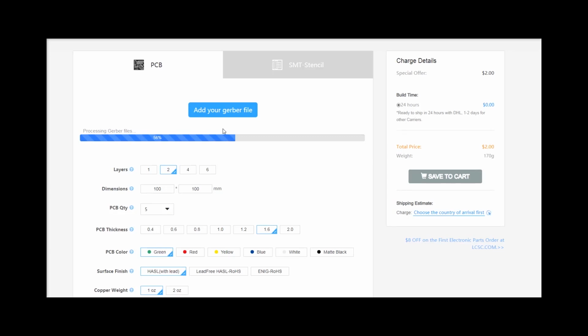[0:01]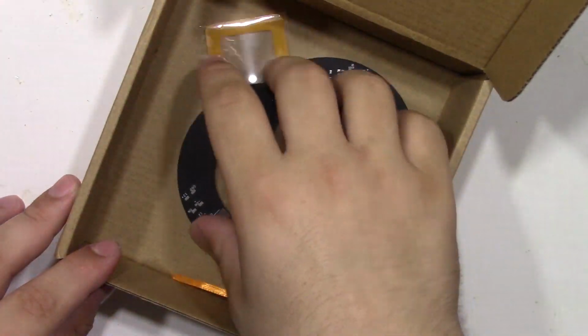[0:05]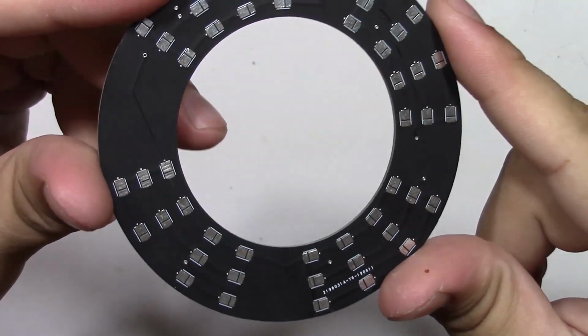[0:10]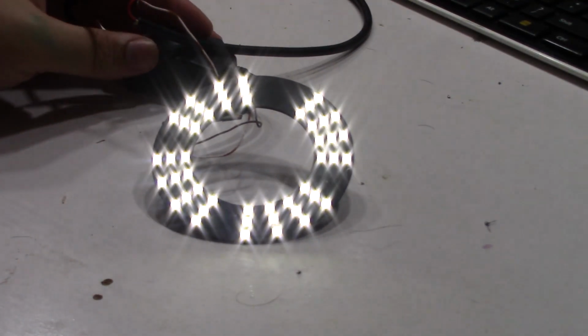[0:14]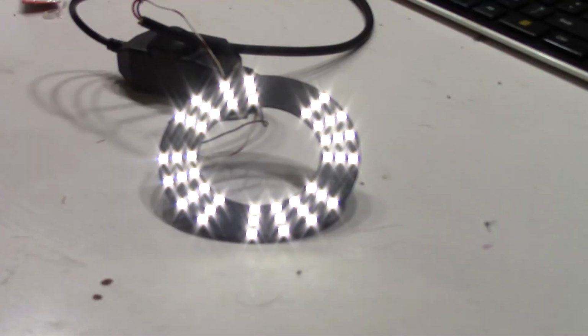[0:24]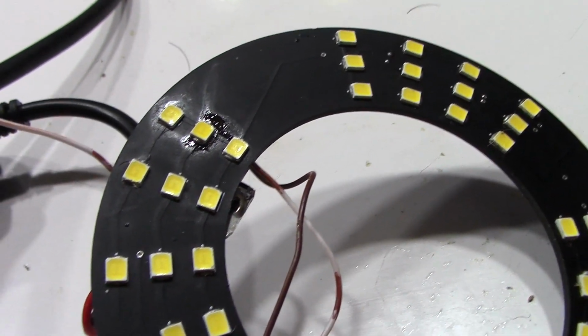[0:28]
I just bought a second microscope, and unlike my first one, it didn't come with the ring light. For some reason, good or even decent ring lights are pretty pricey. I paid $200 for the scope, and I will not pay $20 for a light, so let's see if I can design my own.
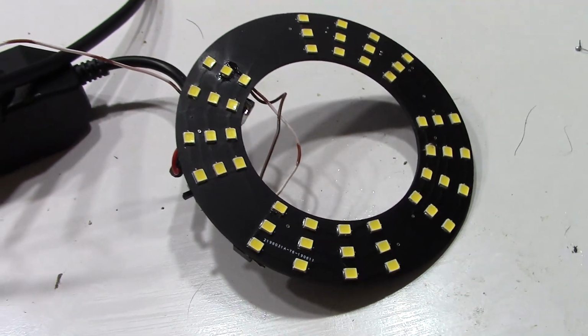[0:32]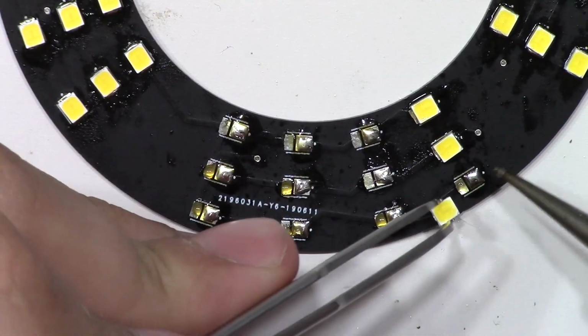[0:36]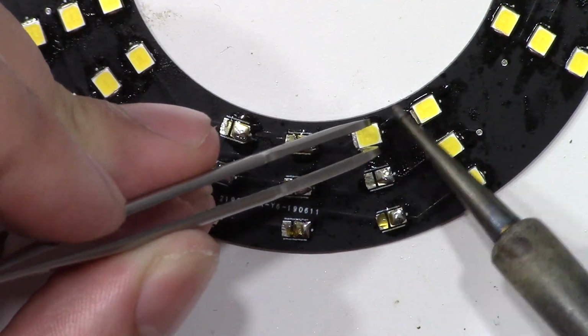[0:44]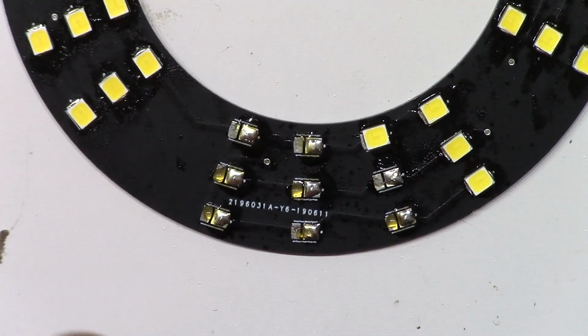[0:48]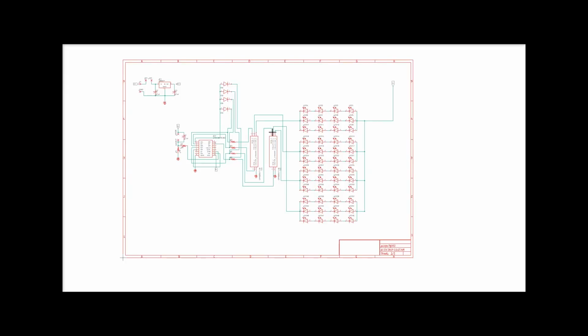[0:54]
So this is the schematic from my LED ring light from my microscope. It's pretty simple. A lot of it's unnecessary in a sense. It consists of 48 surface mount LEDs, which are in groups of 12. Right here we have them running in series, four in series in parallel with two more. So three sets of four in parallel ran in series, if that makes any sense. They're tied high to 12 volts. I should use a resistor in between the positive side of them, but I didn't because 12 volts. So we'll see what happens and go from there.
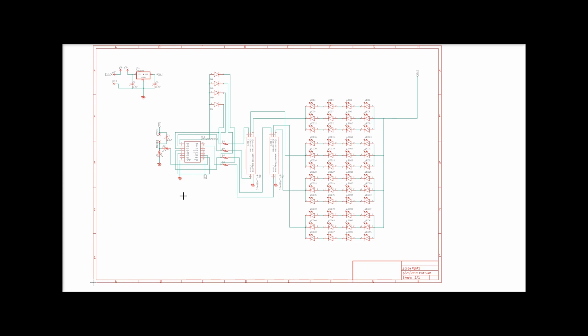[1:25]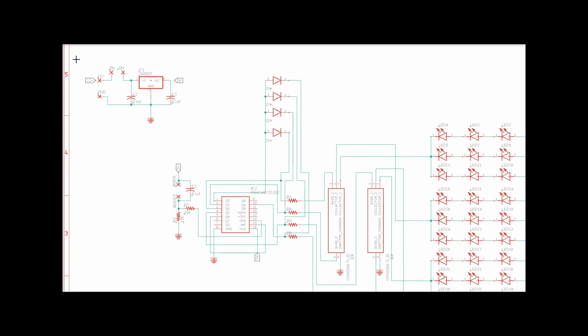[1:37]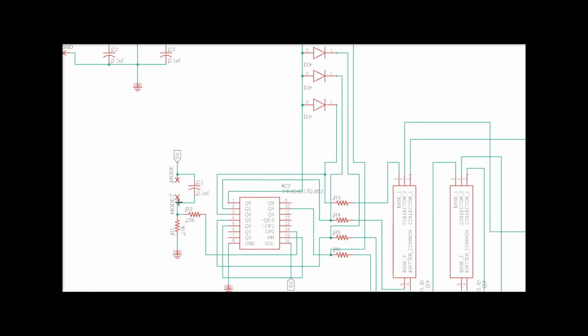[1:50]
Over here we have our control circuitry, which just consists of a 4017 decade counter, two dual packaged NPN transistors to control the groups of LEDs, four diodes up here, I'll explain those in a second, and our power supply for the 4017 decade counter. The LEDs take 12 volts, but the 4017 works at a lower voltage, so I just threw in a 7805 voltage regulator to give it a power supply. Right here we have our clock input, which we'll be using to shift the outputs of the 4017. We're just going to tie in a little tactile switch to this and push it manually. So I'll explain how it works real quick.
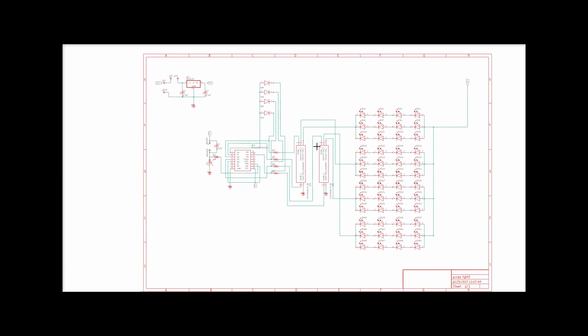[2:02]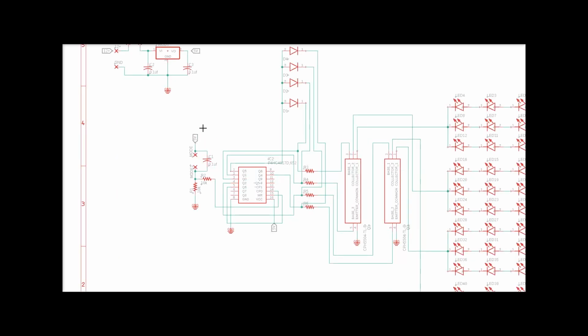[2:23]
I kind of want to go after the same method or functionality that I used for my relay workbench light that I made a while back, in the sense that I want one group of LEDs to be active at one time, or all of them at one time. This is a very specific need. I'm just trying to see if I can throw light in a certain way. And if it doesn't work, I'll just have them active at all times and just dim it from there or something like that.
How it works is quite simple. The 4017 decade counter shifts its output high in a sequential order based on a clock input. In this case, I'm using it manually. So we have these four resistors right here. They are tied to the base of these two transistor packages, which is just four transistors, and these four diodes up here. You push the button and it'll shift one output high, push it again and it'll shift the next output high, turn that one off, and so on.
When you get to the last output, which is output 5, it'll send a small bit of current to these diodes up here. They're all tied in parallel on this side. And on the cathode side of the diodes, they are tied to resistors over here, just in parallel with the resistors. The idea behind this is to have these diodes activate all of the bases of these transistors at once without having any current seek into the path of the other outputs, and activating the transistors by themselves in a different output mode. So this allows me to turn on all outputs at once without interfering with the other outputs, if that makes any sense. Hopefully I explained that well enough.
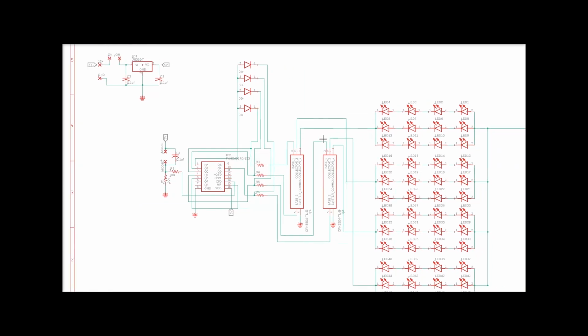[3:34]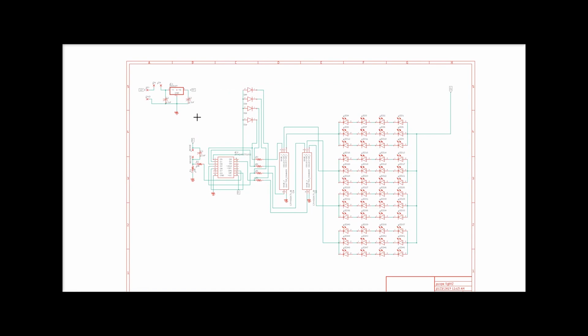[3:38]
Pretty straightforward circuit. If you didn't want this control circuitry over here, all you have to do is just route it with the LEDs and you should be good. I just wanted to see if I can make it a little bit more interesting and see if I can throw the light in a fun way.
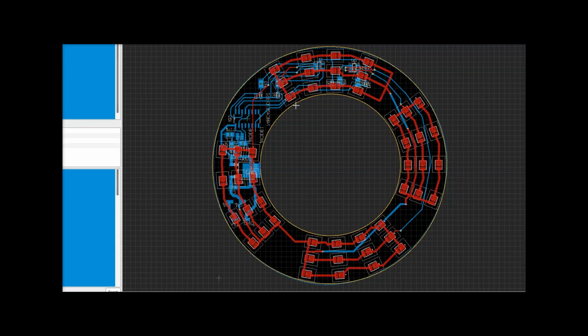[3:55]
So we'll take a peek at the board file that I came up with. Just switch over here. And you can see that it's a bit weird. I've never routed edges on a round board before, so it was a bit of a challenge. I think it was kind of fun. It turned out okay. Some of the edges make me cringe a little bit, but overall it should work. They are thick enough to handle the current and all that jazz.
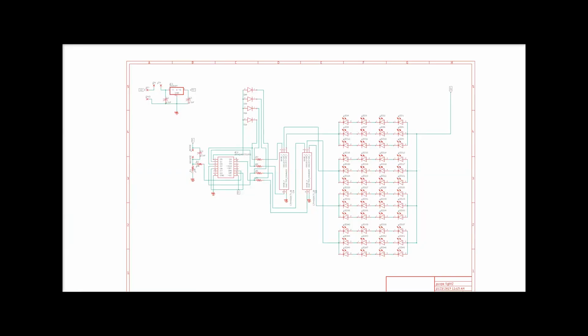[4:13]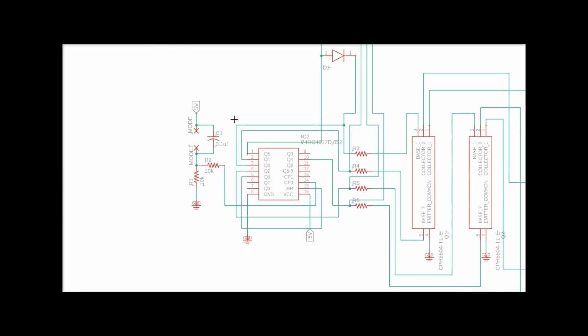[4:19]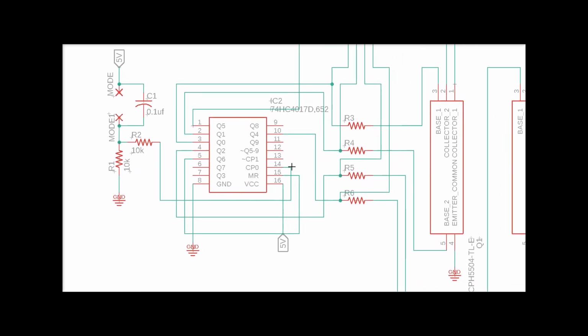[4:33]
But before we go ahead and solder this thing, I want to point out a couple things that I noticed after I sent the board off to JLC PCB, of course. If we take a peek right here, we will notice that I want to say the clock enable pin isn't grounded. I'm pretty sure it's not grounded. Let's go ahead and take a look here.
I think 13 is the clock enable. It's not grounded. That pin has to be grounded in order to enable clock input, of course. And I also messed up the sequential order of the transistors right here. As you can see, Q3, which is pin 7, is not being used, and it should be. Instead, I accidentally went and skipped it, and I'll have to address that as well.
So in the following assembly videos, I'll just add these two mods in, and hopefully that's the only mods that are needed. I'll just ground this pin right here, which is pin 13. I'm pretty sure it's clock enable. I'm not too sure what CP1 means on this, but it is clock enable, and I'll be sure to adjust these as needed. Q3 should be used, but instead I went Q0, Q1, Q2, skipped Q3, Q4, and Q5, so I'll have to address that.
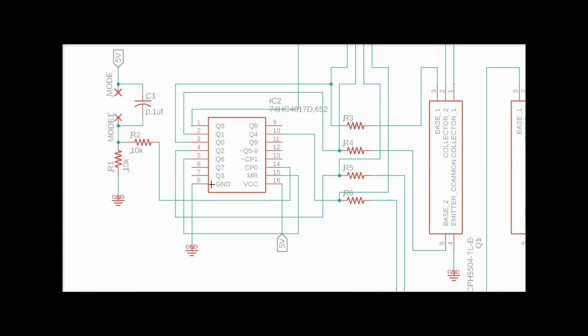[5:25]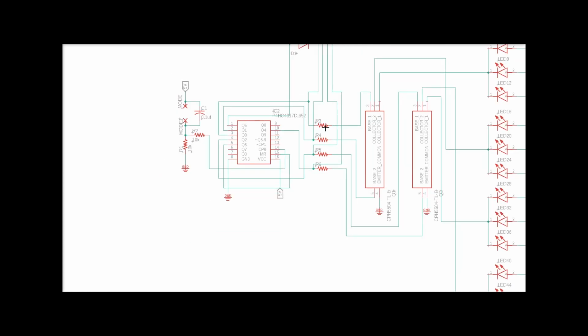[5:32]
This really isn't a big deal, but you'll notice a small delay when you're shifting the outputs, and I don't want that. I want it to kind of work smoothly. So let's go ahead and assemble this thing.
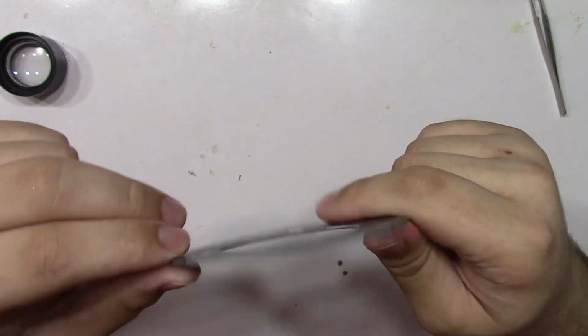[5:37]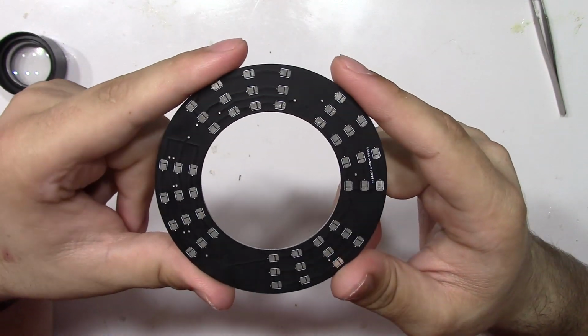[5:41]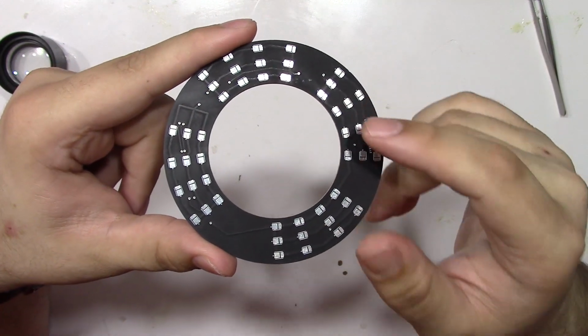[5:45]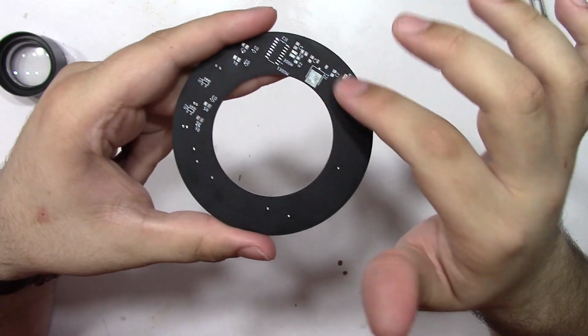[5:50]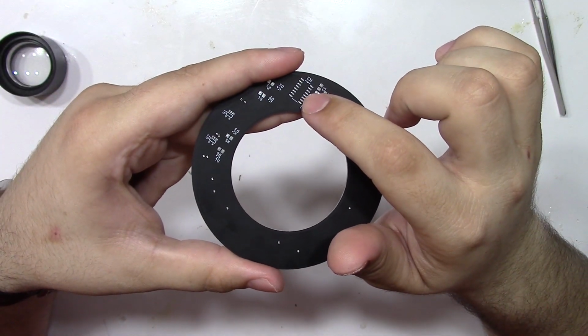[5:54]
But before I solder components up to it, I want to get a closer look at it and show you guys everything. This is a really good quality board from JLC PCB. As you can see, we have the surface mount LEDs on this side, which is the bottom, which it'll point down like this. On this side, we have all the components that control the LEDs, as well as the power supply for the decade counter right here and all the other fun stuff.
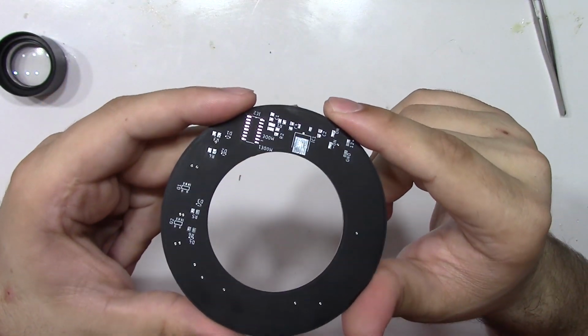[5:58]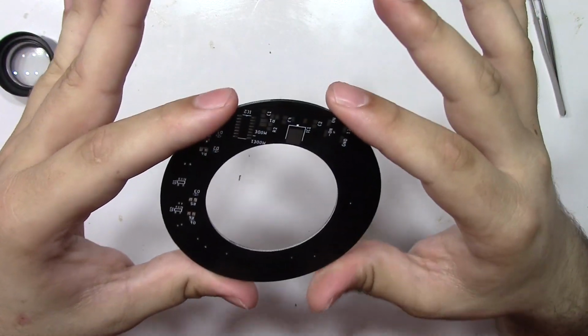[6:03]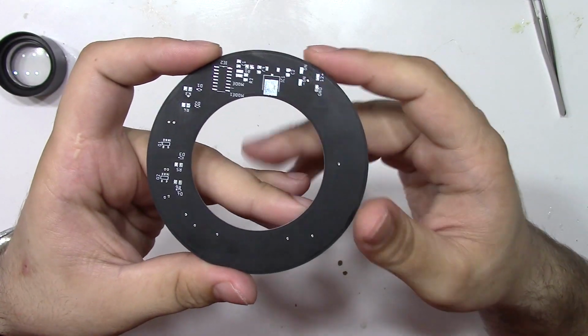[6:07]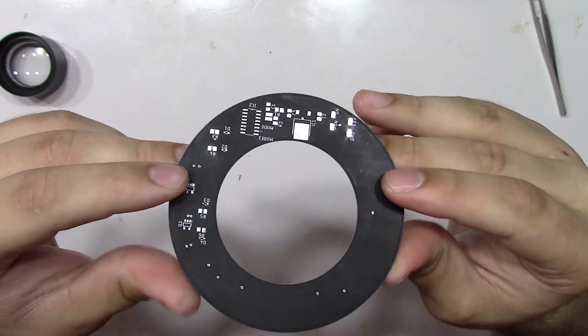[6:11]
When I originally designed this, I expected to use it in a more modular sense, but now that I got it, I kind of realized that I don't need to. What I mean by that is when I designed it, I thought I'd be using a case to house everything in, but it's so small and compact, I actually don't need a case.
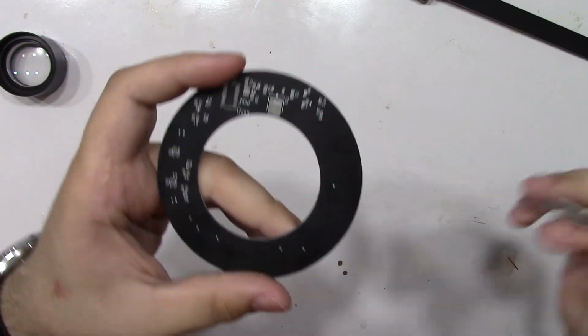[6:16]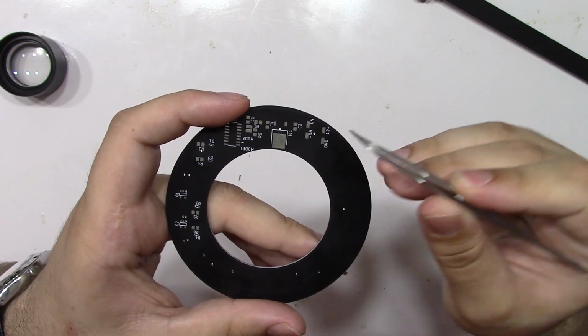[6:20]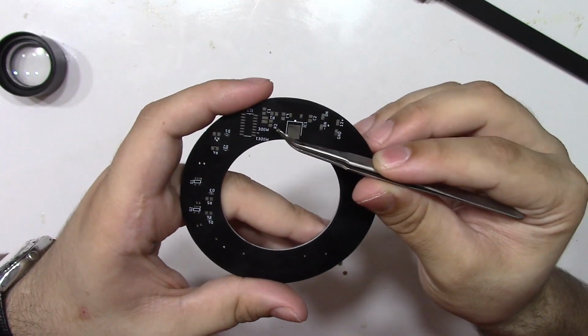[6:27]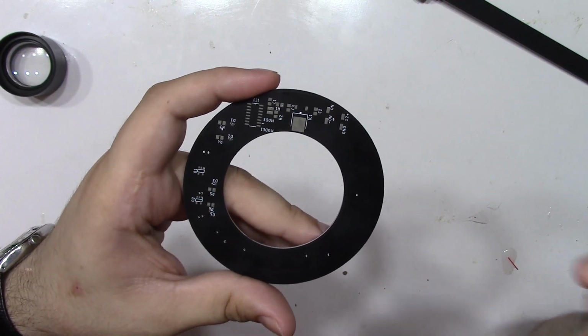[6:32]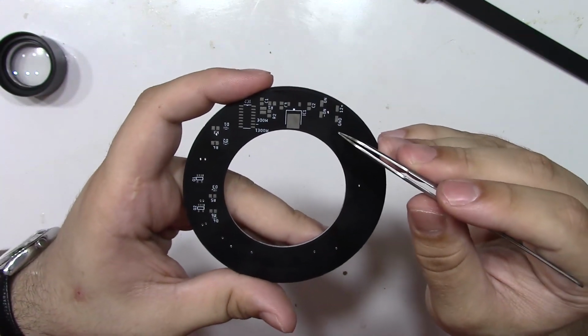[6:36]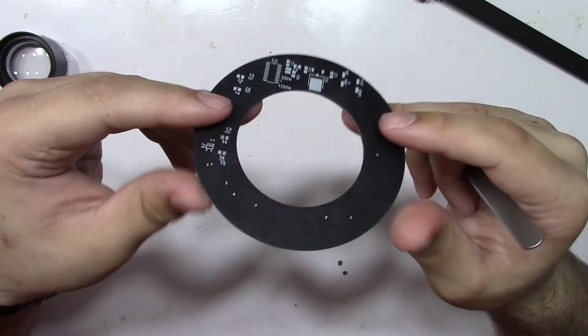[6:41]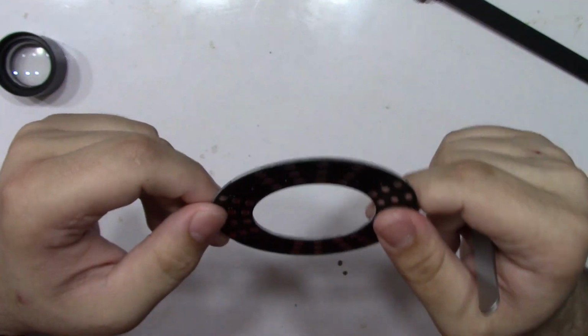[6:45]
So when I put all of this stuff into Eagle, my idea was to use wire pads to wire up the switches and everything and the power supply. So right here is the 12 volts in, the ground for the 12 volts. Little on-off pads that turn the whole thing on and off, and over here we have what's called mode, which helps select what group of LEDs, if not all of them, you want turned on. And looking at it now, I probably should have just included pads for buttons and switches on this, because it's pretty small and it's really compact, so I don't think I need to put a case on it, and I don't want to put a case on it now that I see it.
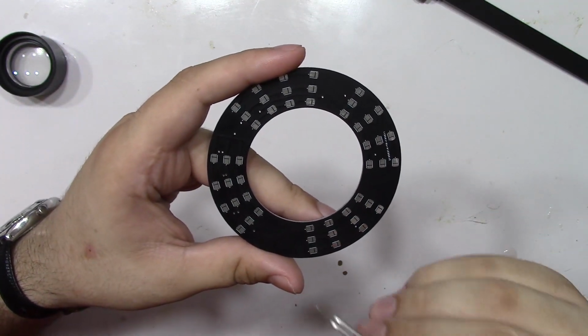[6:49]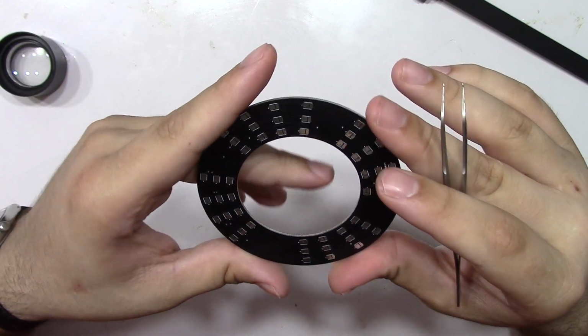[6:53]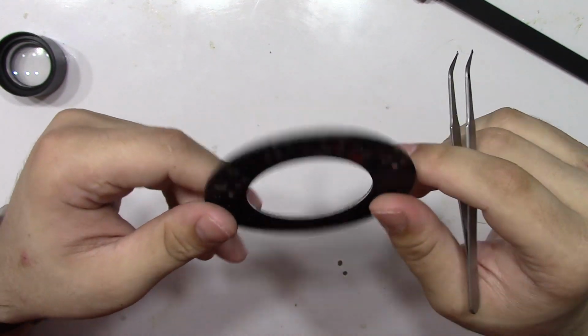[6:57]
And to explain the black solder mask, my idea is that the black will help the light bounce off of it and reflect more in the direction of what you want. So let's go ahead and solder up some components on this thing and see if it works.
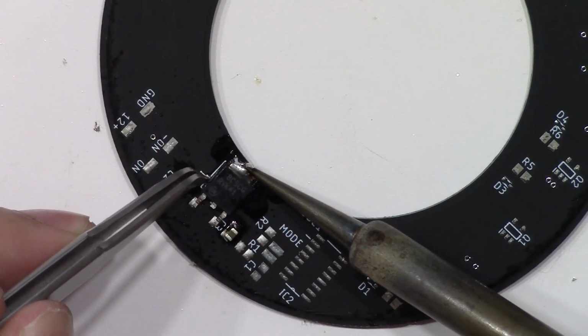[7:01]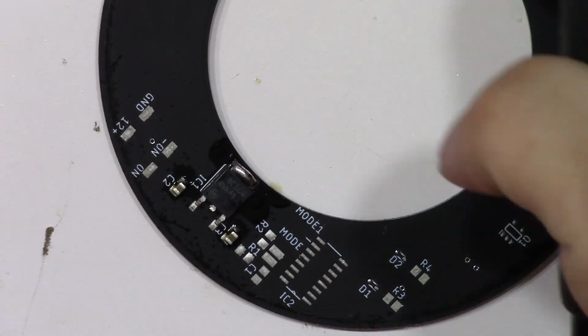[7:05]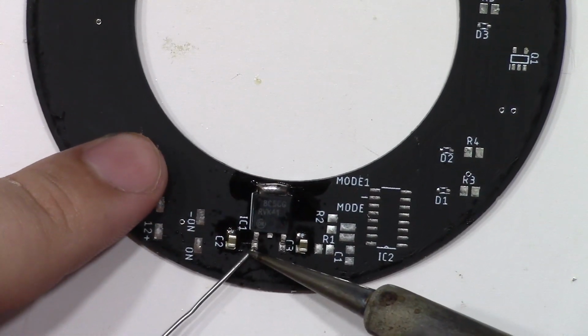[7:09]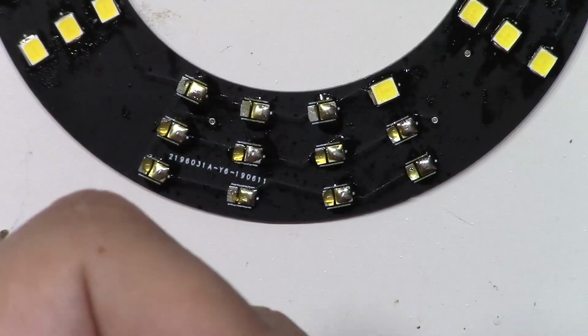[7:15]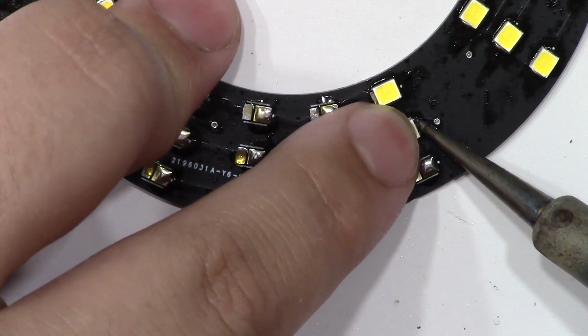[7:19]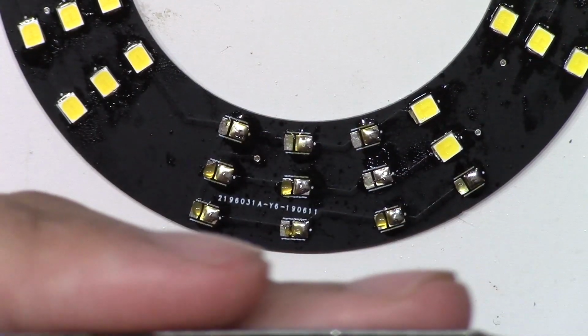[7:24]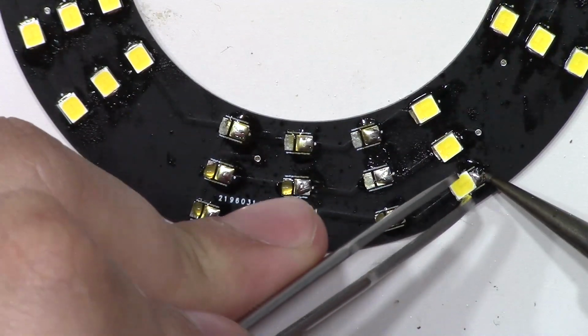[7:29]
The most time-consuming part of this project was soldering all the LEDs. You have to be really careful when soldering them. If you leave your iron on too long, you risk damaging the LED. Solder them from the sides and do so quickly.
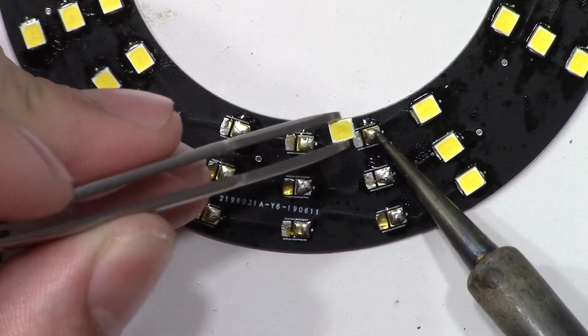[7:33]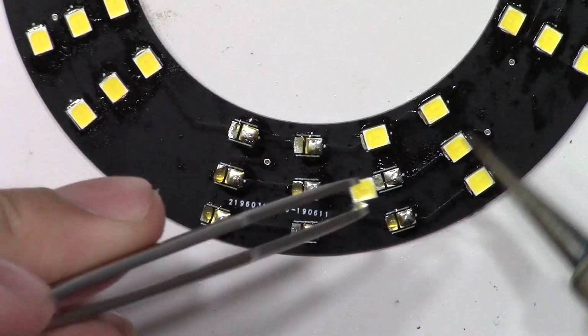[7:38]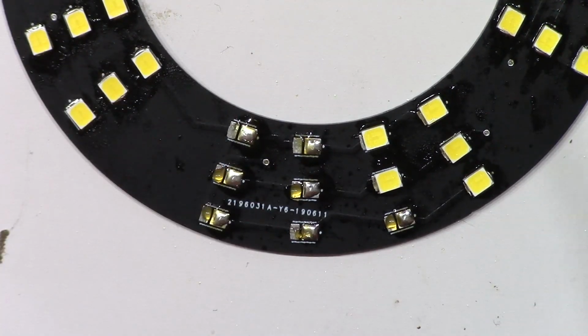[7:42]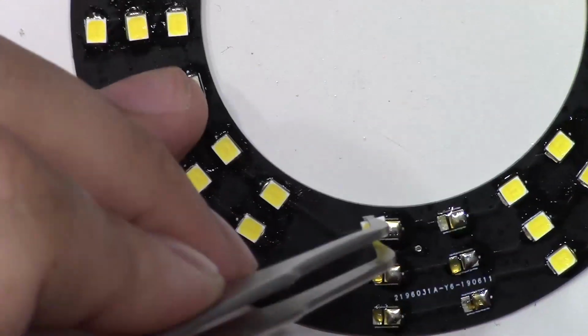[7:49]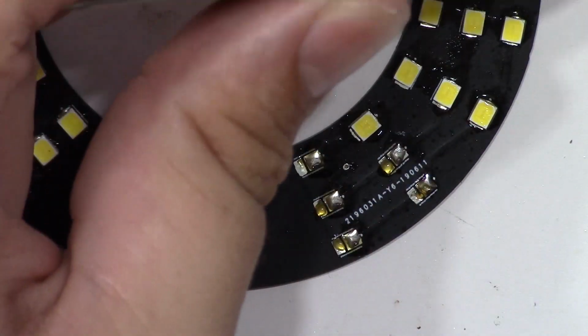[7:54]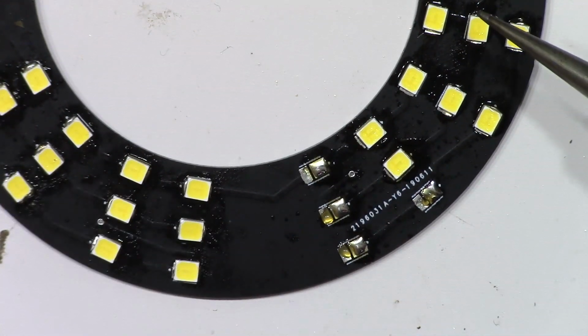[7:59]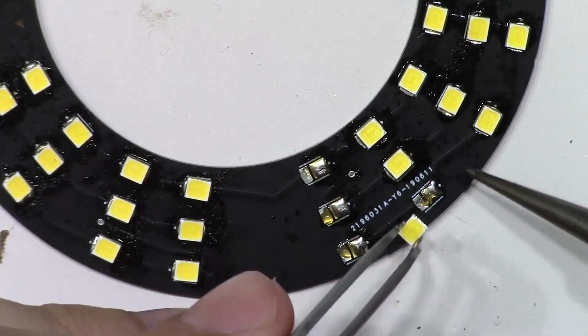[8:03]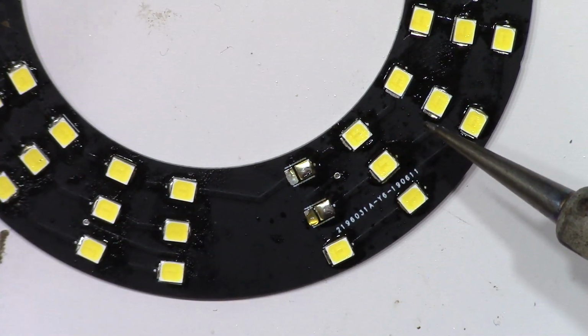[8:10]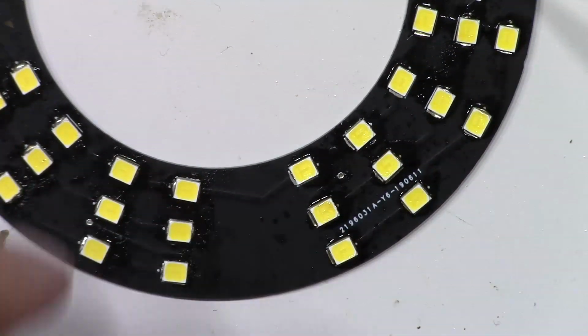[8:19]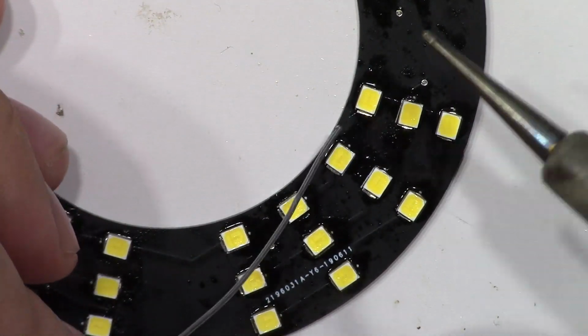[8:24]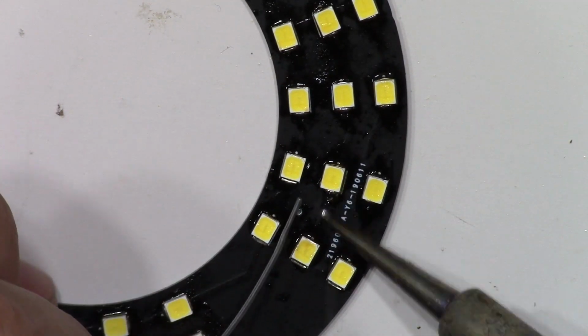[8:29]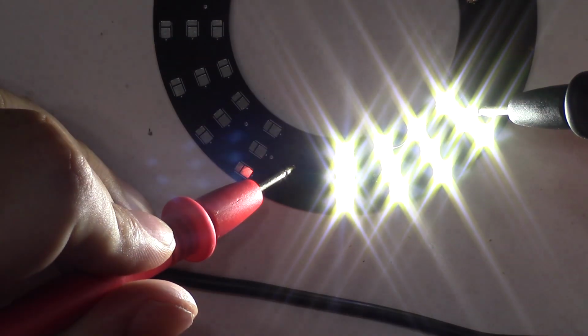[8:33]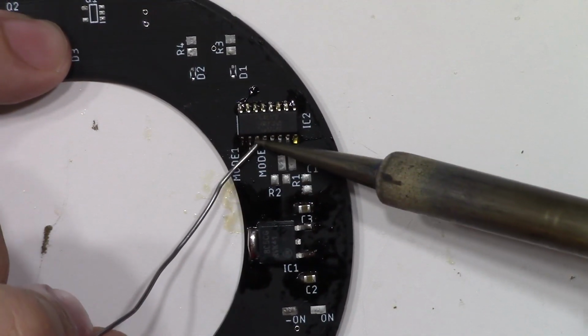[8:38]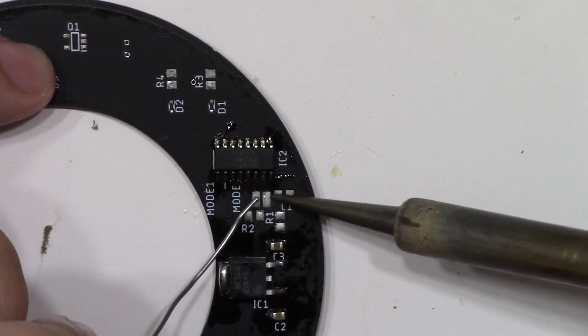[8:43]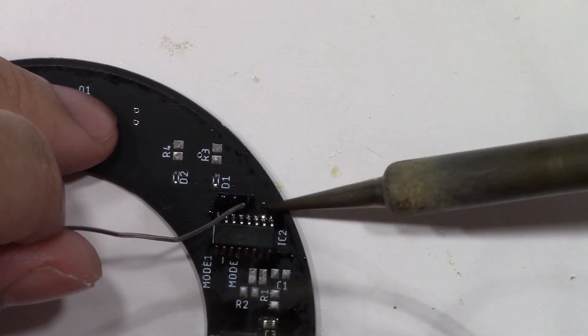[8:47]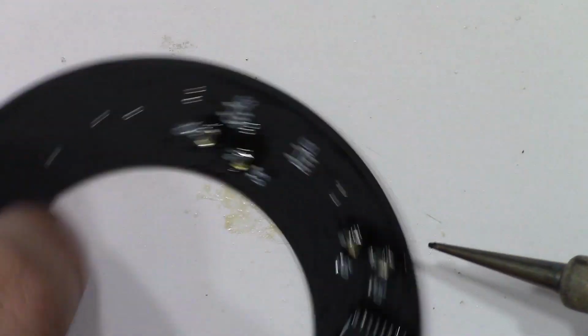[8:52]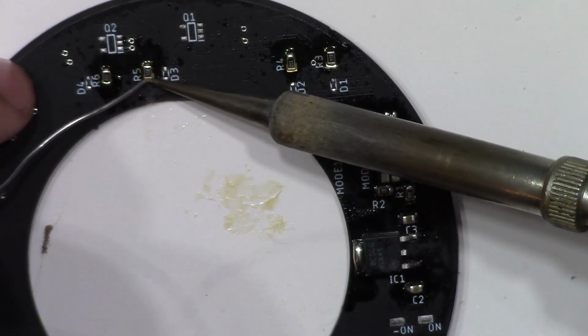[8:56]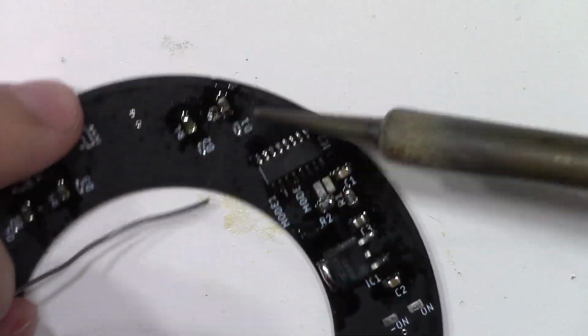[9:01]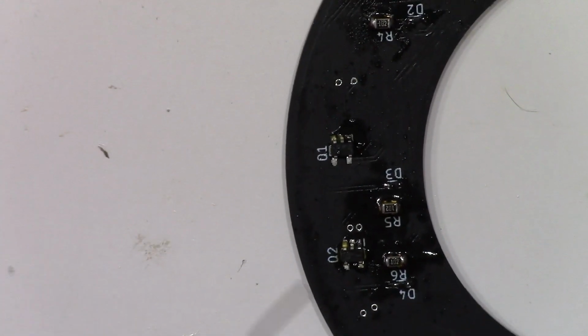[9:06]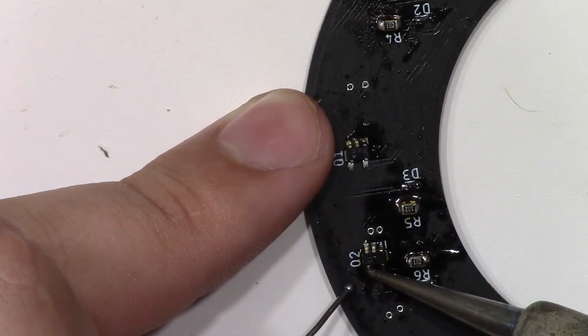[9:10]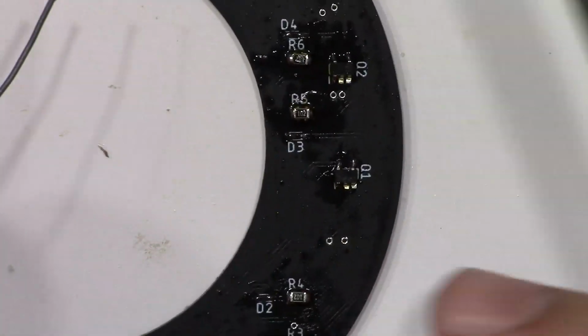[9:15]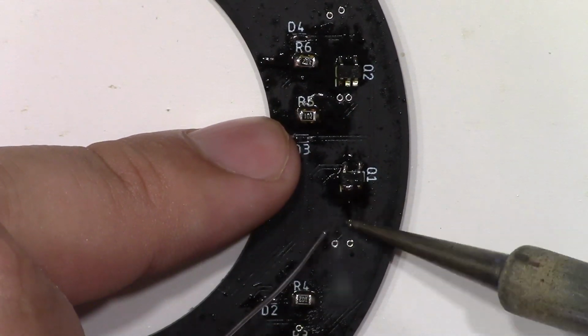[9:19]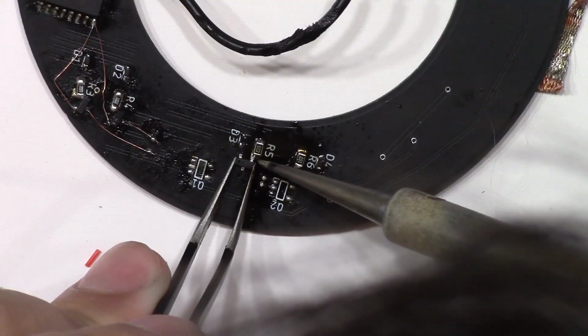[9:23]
After everything was soldered, I gave it a quick test to find out that it didn't work. For some reason, the dual package transistors don't like to play well with each other. I'll explain more later, but for now, let's just go ahead and mod the board to make it work, and we'll address everything else in another schematic.
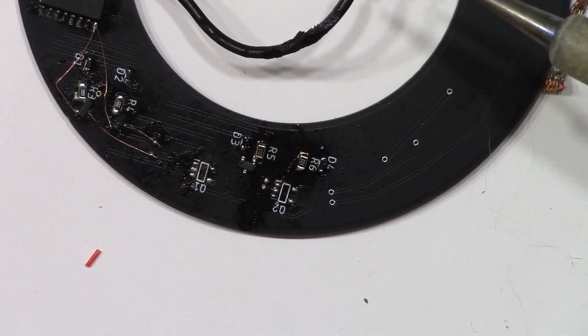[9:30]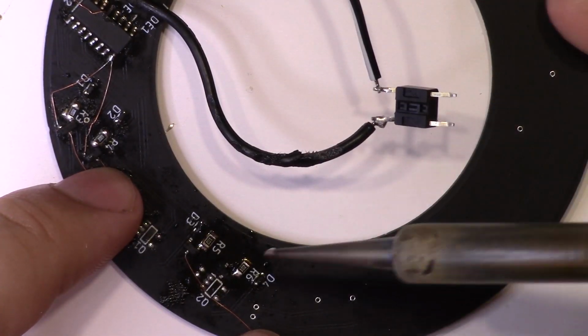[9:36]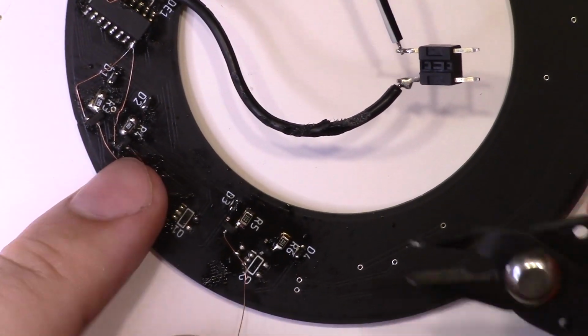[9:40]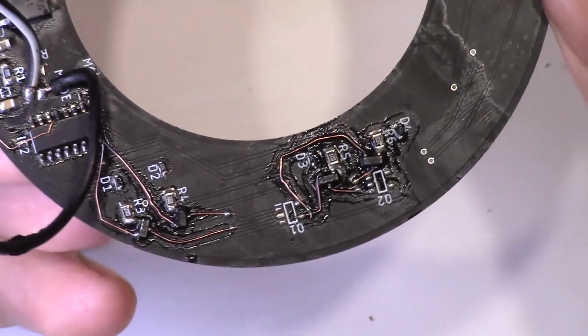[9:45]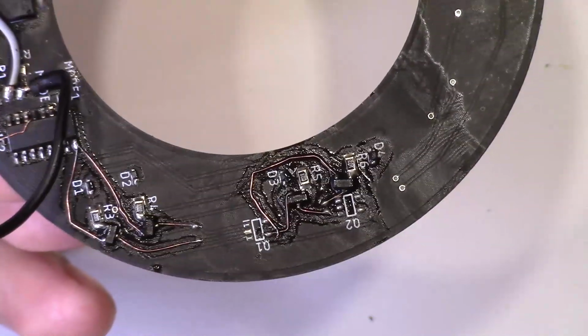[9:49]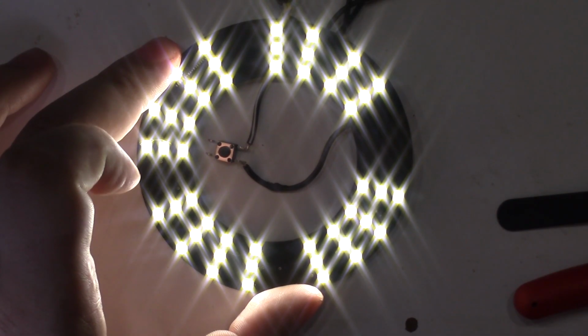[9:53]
This board required a lot of modifications to make it work. As you can see, I swapped out the dual package transistors with little single package ones that I had on hand, and I had to route a lot of my own etches using thin copper wire. After all the modifications were complete, the board worked just fine, so now it's time to go ahead and incorporate all these changes into a new design.
So after getting an idea of what needed to be done for the previous board to work, I went ahead and incorporated all the mods to a new schematic file, and it's shown right here. As you can see, I went ahead and got rid of the dual package transistors. For some reason, they didn't like to play nice with each other. If one base was activated on one, another one would be slightly activated, and you can see one group of LEDs turned on at full brightness, the other one's just kind of dimmed. I didn't like that, and for some reason when I switched out the dual packages for individual ones, it worked just fine.
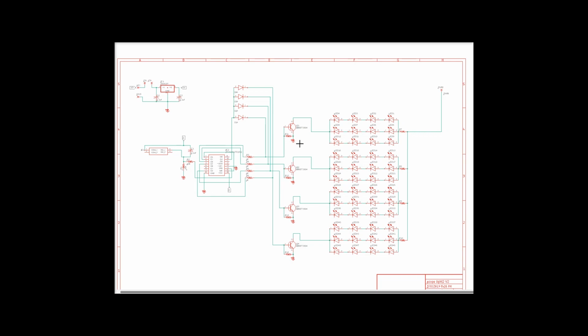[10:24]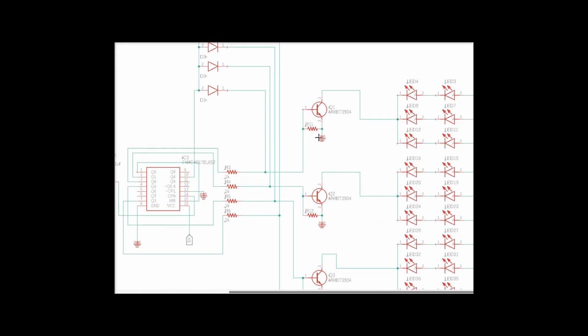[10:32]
So I incorporated that into the schematic, and I'm using 3904, which is just 2N3904 equivalent transistors, and they work just fine. I went ahead and added pull-down resistors to the bases. It's a value that has yet to be determined. Might not even be necessary if all works well, but I figured it might as well, you know, prove safe just to throw that in there if I need it.
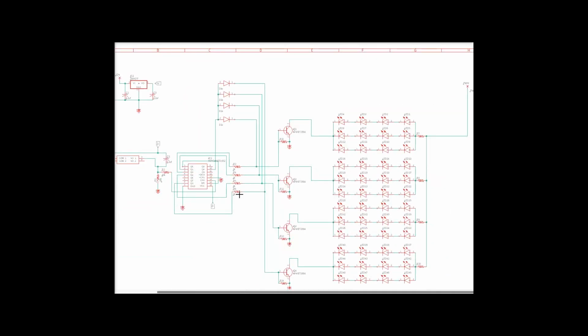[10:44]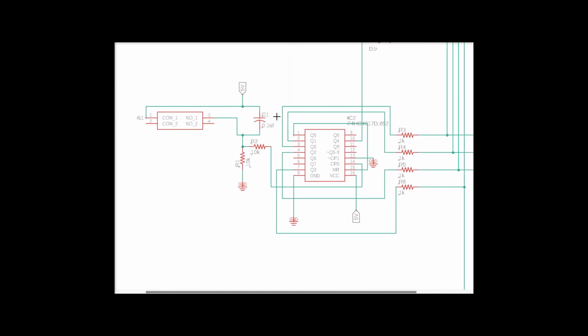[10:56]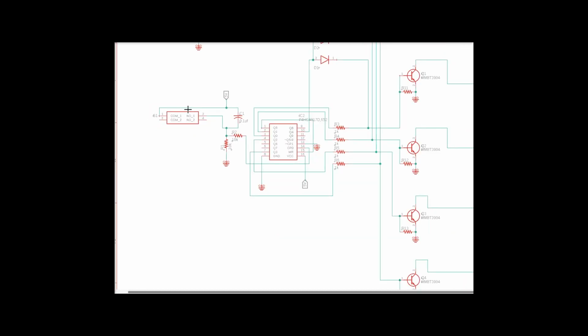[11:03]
I also went ahead and fixed the issues with the 4017 decade counter circuit. I used Q3 instead of skipping over it, and I grounded the clock enable, which means this will work just fine. In addition to that, I added a tactile switch to it, so I didn't have to mount a tactile switch externally, which after seeing it on the first board looked kind of stupid, so I just went ahead and threw that in.
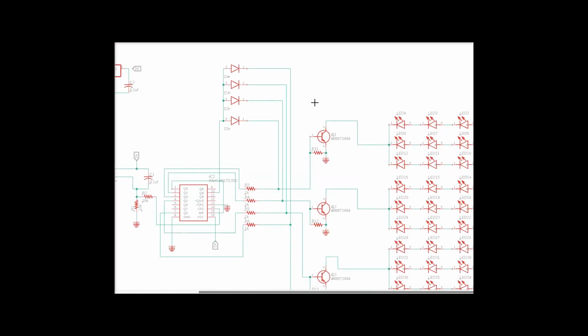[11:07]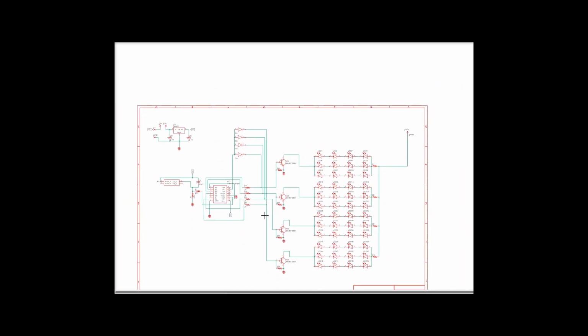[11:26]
I also moved the cathode position of the diodes. So when all these diodes turn on, it would go to this side of the resistor. For some reason, that proved to be too much resistance for it to turn on the bases of the transistors. So moving the cathode position to after the resistor proved to work just fine, and all that is good.
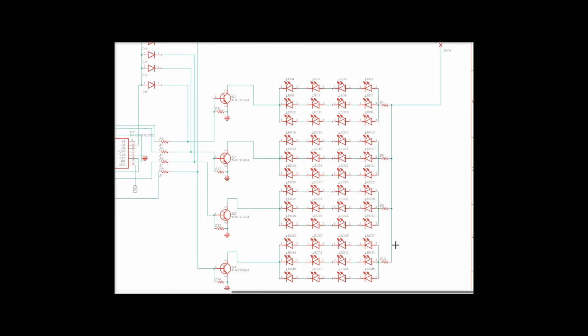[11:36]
And over here, you can see I added resistors to the grouping of the LEDs. Better safe than sorry. It might not even need them, but I just figured I'd throw them in there. Sure, I'll get some hate for not using resistors individually with the LEDs, but I'm pretty sure this is just fine. I've used one resistor for a grouping of LEDs in the past, and it worked just fine, so no big deal there.
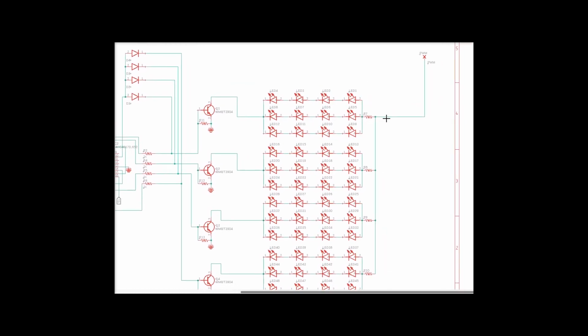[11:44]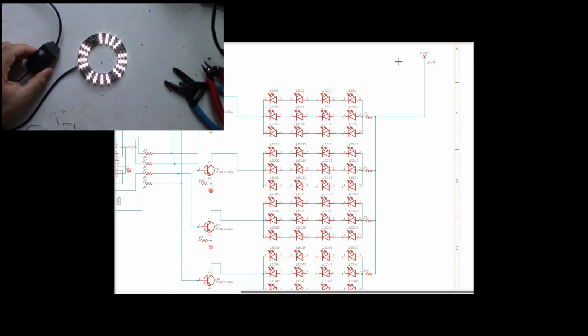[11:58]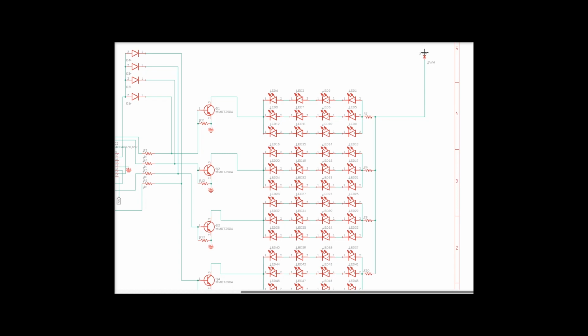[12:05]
In addition to all this stuff, I went ahead and tied the high LED, which used to be 12 volts, to a pad called PWM. I picked up an external LED dimmer thing that I found on Amazon, which is right here. And for some reason, it worked awesomely, so I just went ahead and tied all the anodes of those LEDs to this PWM, that way I can dim it externally without having to add my own dimming circuit to an already crowded board, which is pretty cool. If you don't want this, you don't have to include it, but I figured it works really awesome for me. And that should be all the changes to the schematic.
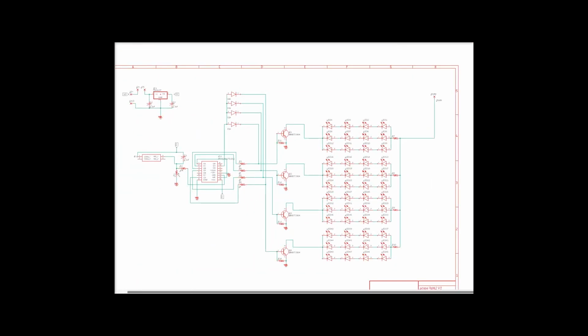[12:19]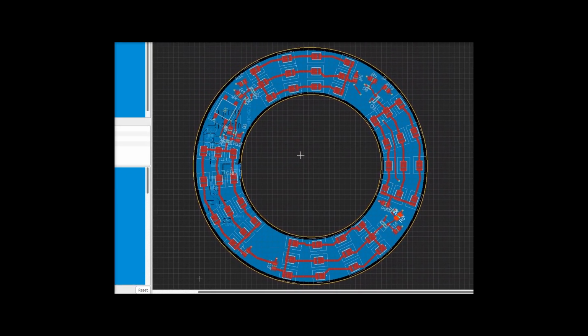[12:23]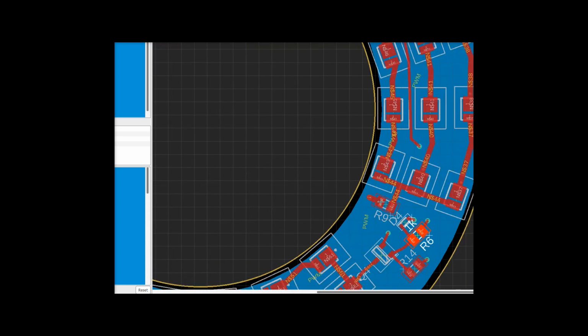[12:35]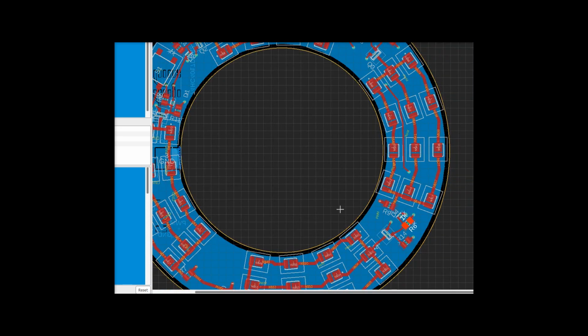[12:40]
Let's go ahead and take a peek at the board file. So the board got some stuff done to it. I had to accommodate for all the added components. As you can see, after the LEDs, we have the transistor, its resistors, the diode, and all that stuff, and then we have the resistors going into the LEDs right here. So I had to make room for a fair amount of parts.
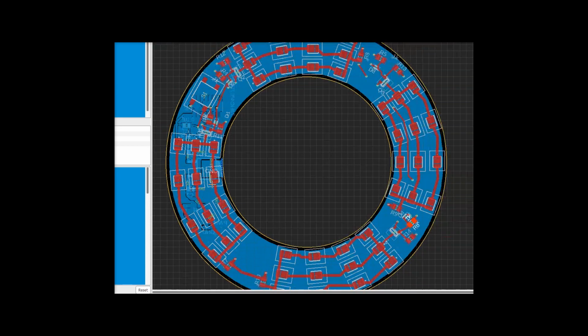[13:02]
For some reason, with Eagle, whenever I add a polygon and call it ground or just fill it ground, it likes to hide all the etches on the bottom side of the board. So if anyone has a remedy for that which doesn't include ripping up that etch, let me know. That'd be really cool. I know in previous versions of Eagle it worked just fine, but for some reason with this one it doesn't like to do it. I have no idea why.
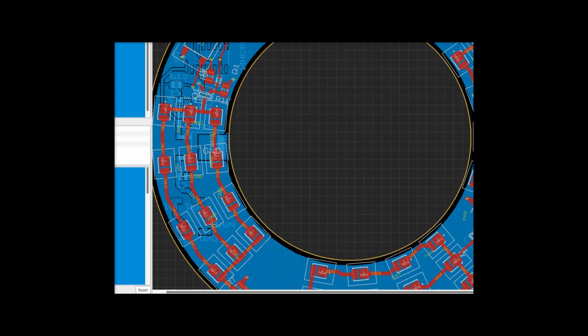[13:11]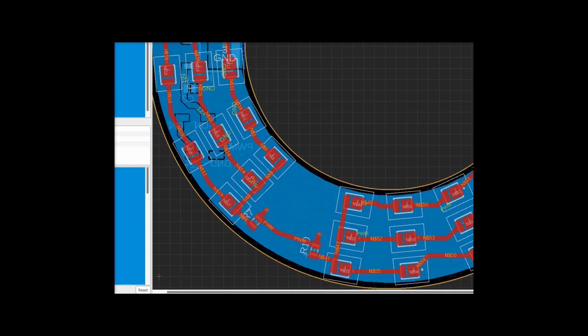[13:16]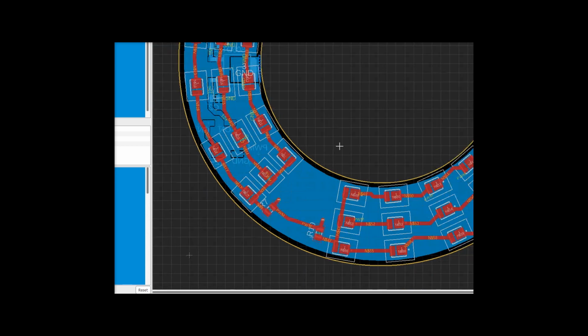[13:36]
So the tactile switch is right up here. It's on the same side of the board with the LEDs, which shouldn't be too bad. And we have the PWM pad right here, which again for some reason is hidden by the ground plane. But if I click on the PWM in etch, which ties to that via, you can see the etch running to it. So if I click right here, you can see the pad. I don't know why it's hidden, it just is. If I saved the file, closed Eagle, then reopened it, you'll see it just fine. It's a weird glitch for some reason. And that is all that I did to the board.
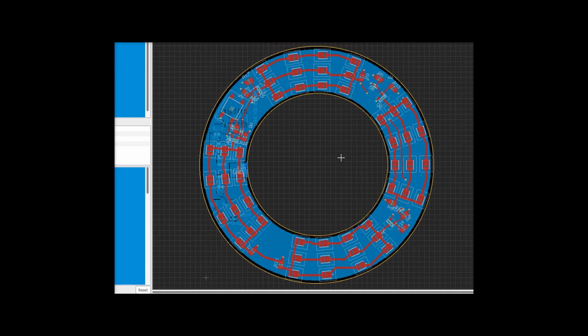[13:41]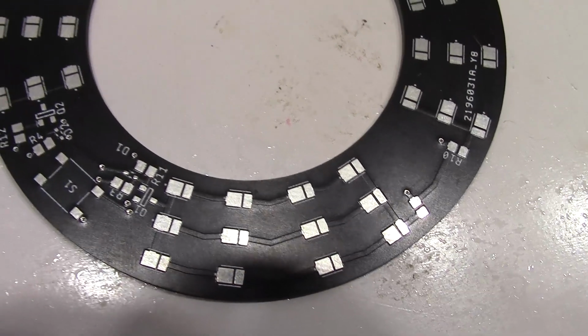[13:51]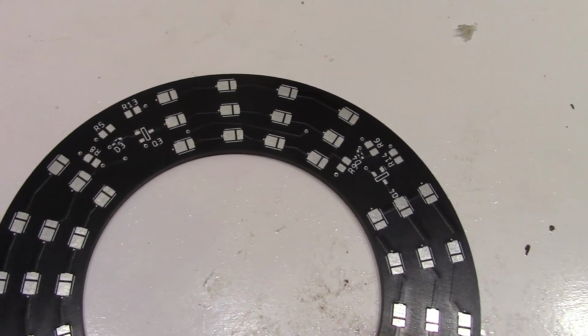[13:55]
It was a bit weird trying to accommodate for all those parts because I really thought I was tapped out on space, but I guess not. So let's go ahead and assemble this board now. Should work just fine. Thanks to some YouTube magic, we skipped a week and a half and we have our second edition of these boards. So let's finish this project.
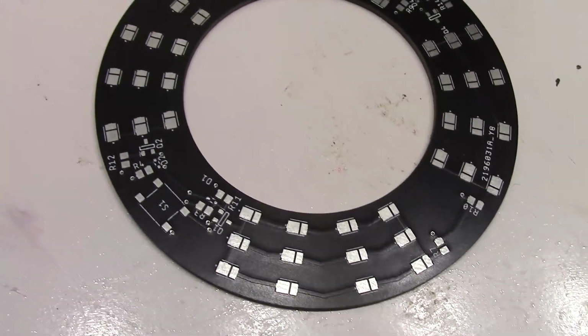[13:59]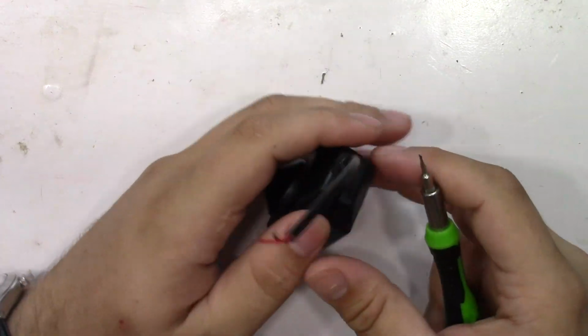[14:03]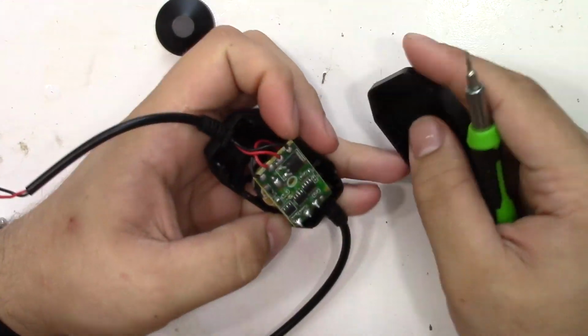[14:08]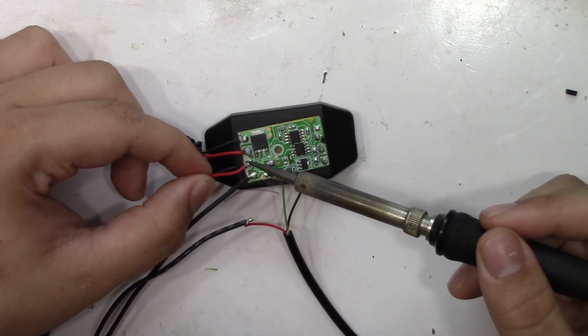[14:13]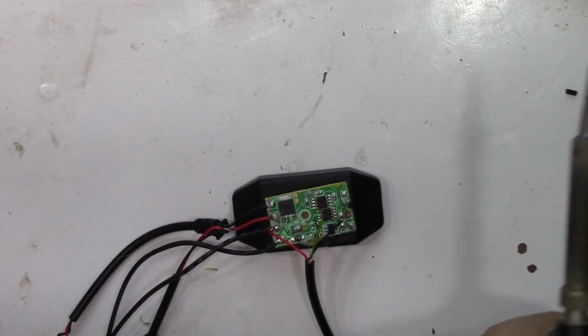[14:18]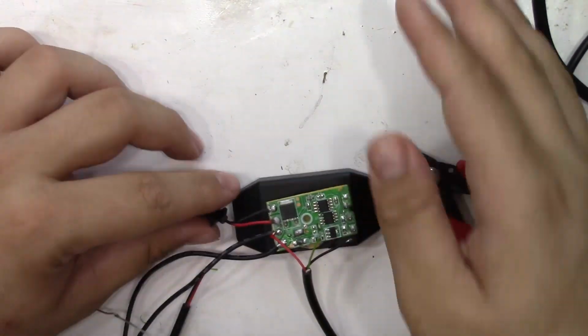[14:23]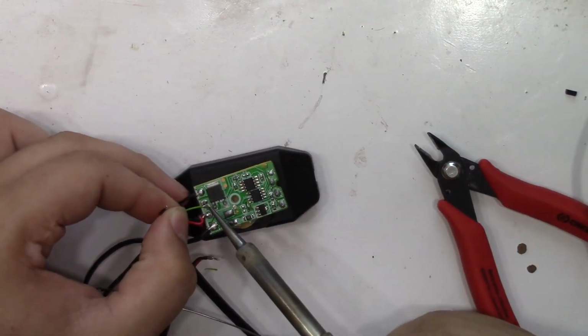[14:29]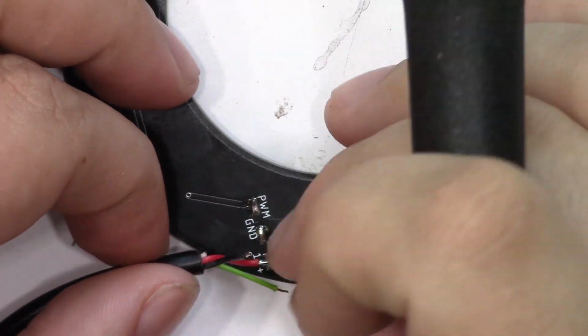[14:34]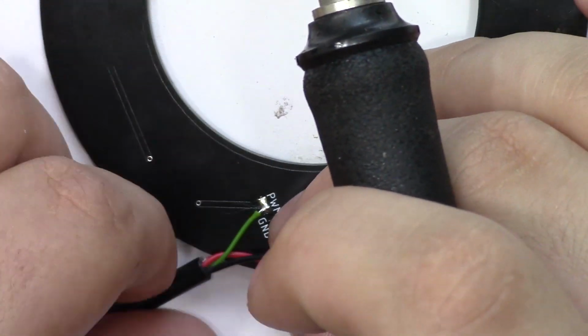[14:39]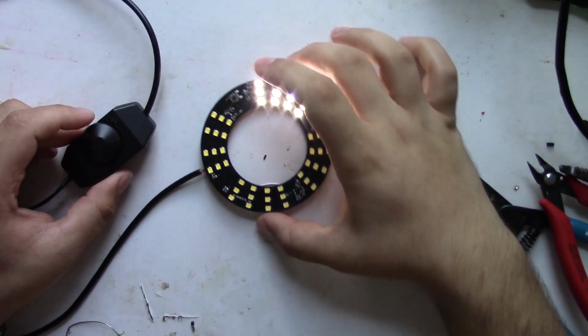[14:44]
In order to use this LED dimmer, I have to modify it to carry the 12 volts input to my board as well as the PWM outputs to my board. I'm using an old USB cable to carry the 12 volts, PWM and ground from the dimmer switch to my board. I didn't think about this, but I should have added a hole for strain relief for the board wires. I'll just use a zip tie for now, but let's go ahead and turn this thing on and see if it works.
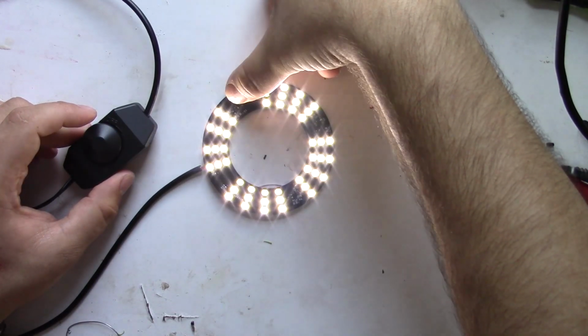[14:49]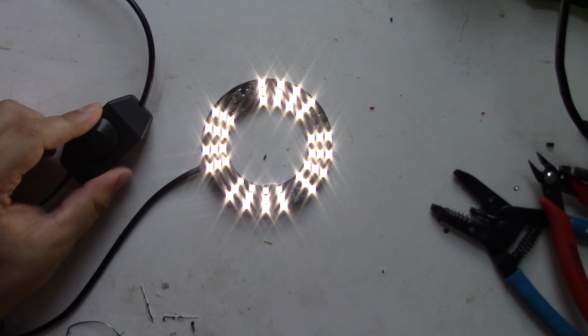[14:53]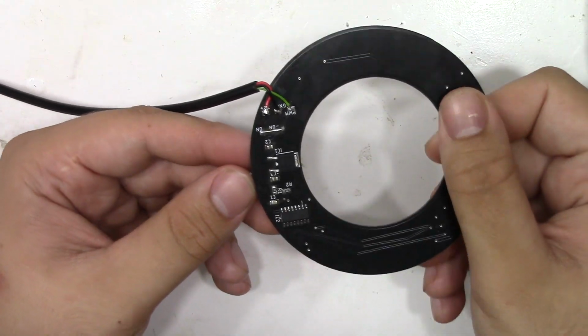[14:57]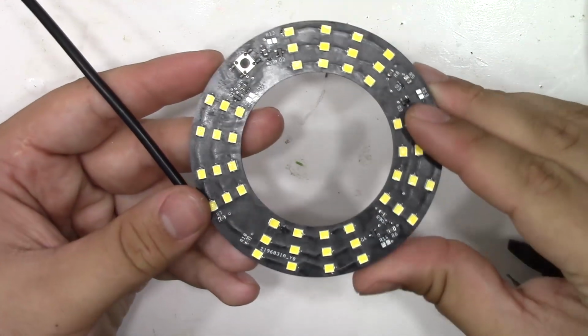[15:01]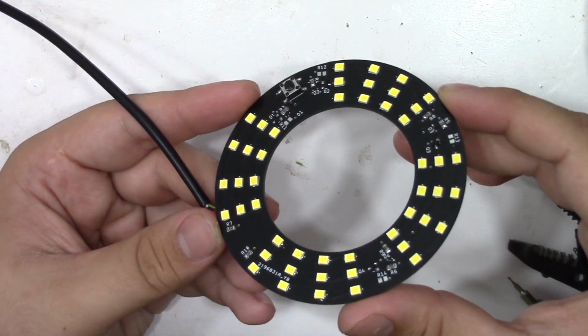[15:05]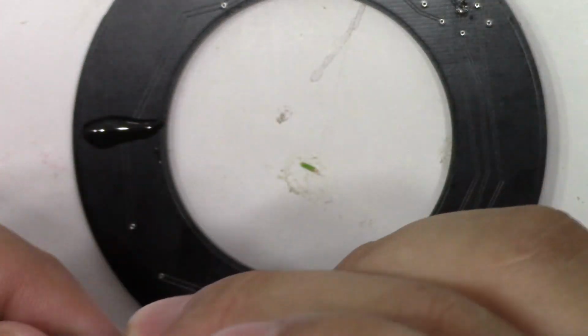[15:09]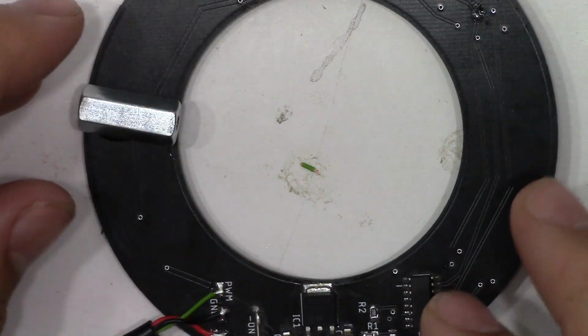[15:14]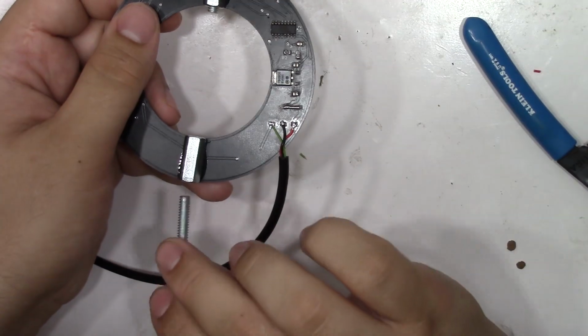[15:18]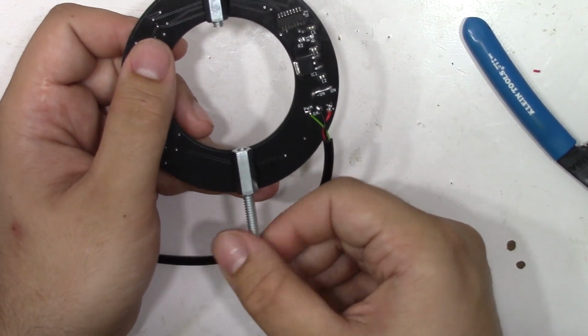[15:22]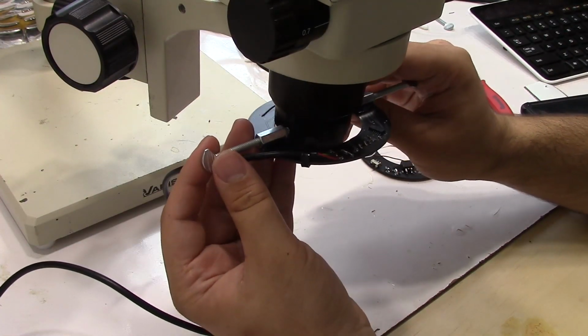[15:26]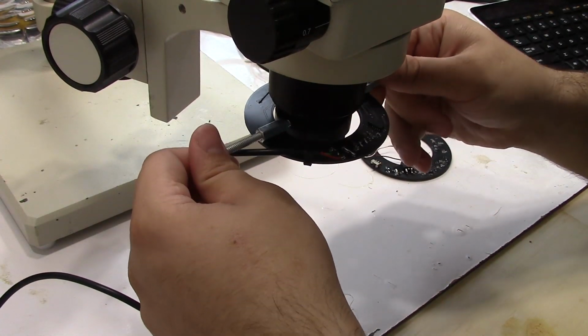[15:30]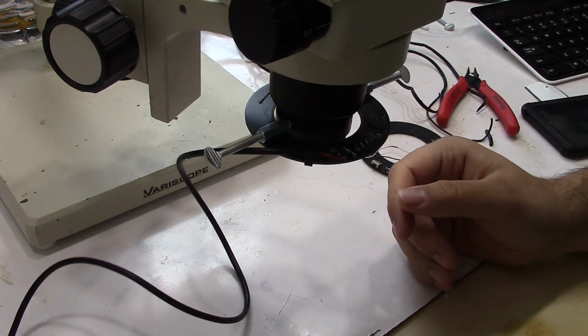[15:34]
With the use of spacers and thumb screws and a little bit of epoxy, I can now mount this board to my microscope. And just like that, I have my very own working microscope ring light. It may not have been a whole lot cheaper to make, but I was able to make 5 of them for probably the price of 2, and it was a lot of fun to design, and that's what it's really all about.